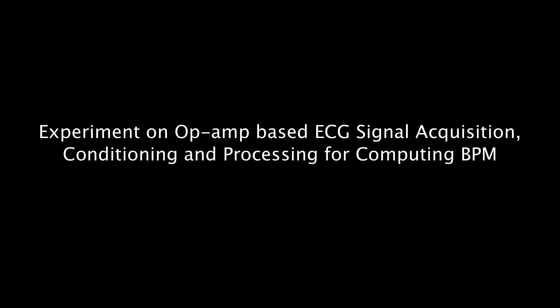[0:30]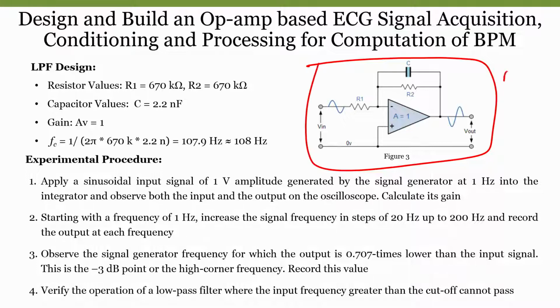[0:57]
How do we do filtering circuit, right? As we have already seen in our previous modules, we know how to make use of an operational amplifier and what are the advantages and disadvantages of going with active filters when compared to passive filters, and we have also discussed the design. Just recall what we have discussed, and if I see here, this is our active low pass filter, right?
So the combination of R and C tells our cutoff frequency, and the combination of R1 and R2 resistors tells us gain. Now, what value of cutoff frequency do we require? We require a cutoff frequency of 100 Hz. Since it is a low pass filter, I do not want to see odd multiples of our power line interference, that means 150 Hz, 300 Hz, everything. So, we will be using a low pass filter with a cutoff frequency of 100 Hz.
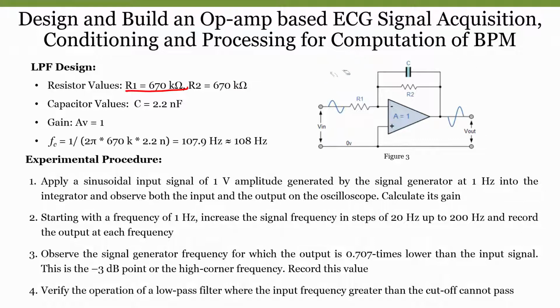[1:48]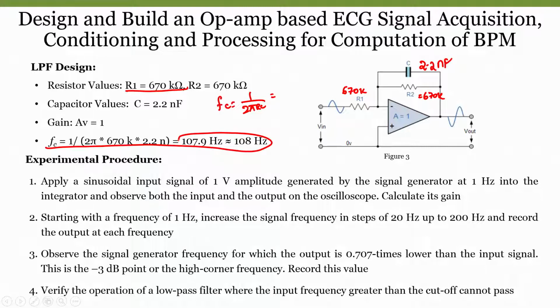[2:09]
Now, how do we know the cutoff frequency? In this case, we are considering a resistance of 670 kilo ohms. This is R1 670 kilo ohms as well as R2 also 670 kilo ohms, and the capacitor as 2.2 nanofarads. Now, if I compute the cutoff frequency, what is the formula? Fc is equal to 1 by 2 pi RC, right? So, when we calculate everything, we will get a cutoff frequency close to 108 Hz.
If I take 2 nanofarads, we can even get 120 Hz, or if I take a smaller value, it will be 100 Hz too. I mean, if I take a larger value, either of resistance or capacitance, we can achieve even 100 Hz. So, in this case, by considering the availability of resistors and capacitors, we are designing a first order low pass filter with a cutoff frequency of 108 Hz.
Then what about the gain of the system? Since R1 and R2 resistors are the same, and since it is an inverting amplifier, the gain is R2 by R1. So, therefore, the gain is 1 in this case. So, what output do we get? Without any amplification, with an amplification factor of 1, we will get the same output, but since it is inverting, we will get a negative. There will be a phase shift of 180 degrees.
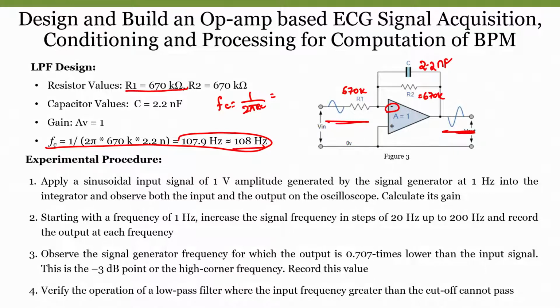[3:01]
Now, how do we know? If I want to understand the circuit, I should look whether it is cutting off at that particular frequency. I have to have a frequency spectrum, and connecting to a frequency spectrum analyzer will be very expensive too, because the equipment itself is very expensive. So, what we can do is visualize whether the designed filter is cutting off at that particular frequency in a CRO itself, and we can even compute the same thing in our laboratory too. How do we do that?
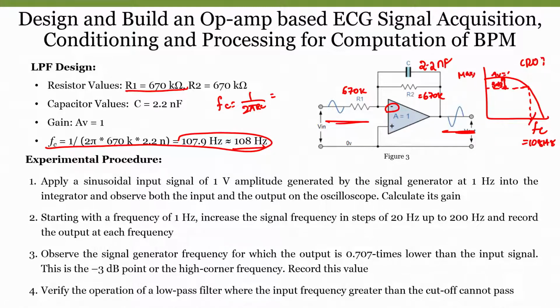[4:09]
As we know, when we look into the frequency spectrum of a low pass filter and the gain is 1, if we can calculate the 3 dB line, this is nothing but our cutoff frequency. Now, in frequency form we are saying this value is 108 Hz, but in a CRO, how do we find it? We know the maximum voltage we get. So, we will take a function generator and apply 1 volt as an input signal. Since the gain is 1, we will get an output of 1 volt. Now, we will slowly increase the frequency and observe the change in amplitude. Whenever we see the 3 dB line, which is nothing but 0.707 times that of your input signal, that particular point is our 3 dB line, and from that point the output voltage will keep on decreasing. That frequency is nothing but our cutoff frequency.
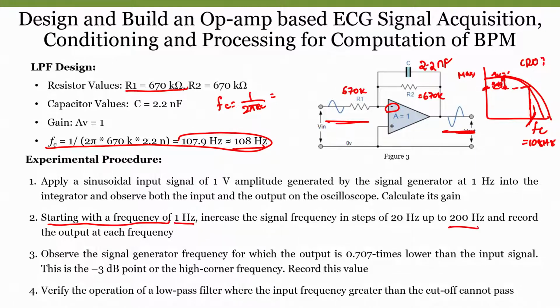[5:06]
But to give the frequency domain visualization, in a simulation I will show you the AC response as well as the DC response, and we can see the complete frequency domain values too. But this is how the connection should look, and we will be using a function generator to sweep from 1 Hz to somewhere around 200 Hz in steps of 20 Hz, and we will record the output at each frequency. So, we will observe the signal generator frequency for which the output is 0.707 times the input signal. That point is nothing but the 3 dB point, and we will consider that as our cutoff frequency. In order to understand much more, we will go to Multisim.
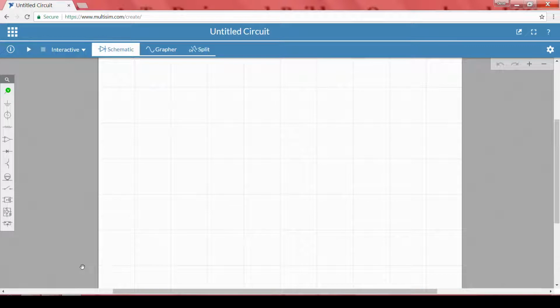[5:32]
So, as we have already seen how Multisim looks like and everything in our previous module, our intention here is to design a filter and see the frequency response, as well as whatever intuition we have learned from the previous experiments and the procedure that we explained. We will try to put the same thing here, analyze it in the time domain too, and compare the frequency domain response with the time domain.
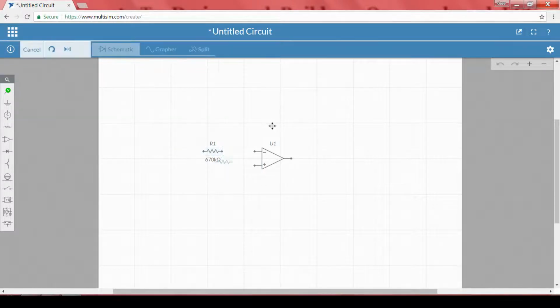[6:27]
So, in such case, what I need now, first I have to take my operational amplifier. So, I will go to op amp and I will select an op amp here. Then I have to take resistors. In this case we have taken 670 kilo ohms resistors, so I am replacing with 670 kilo ohms resistor, and one more resistor that is also 670 kilo ohms. So, that is a negative feedback resistor.
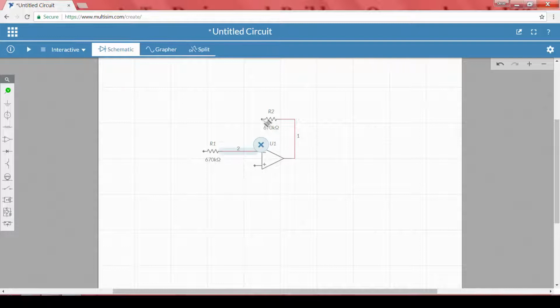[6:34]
So, I will be connecting from here to here. Then what is the other one? We also have to connect a capacitor across R2. So, what I will do? I will take a capacitor. What is the capacitor that we have used in our theoretical designs? We have used 2.2 nanofarads. So, I will go with 2.2 nanofarads, and 2.2 nanofarads are available in the market too, right.
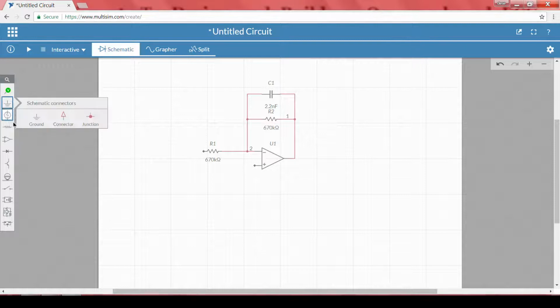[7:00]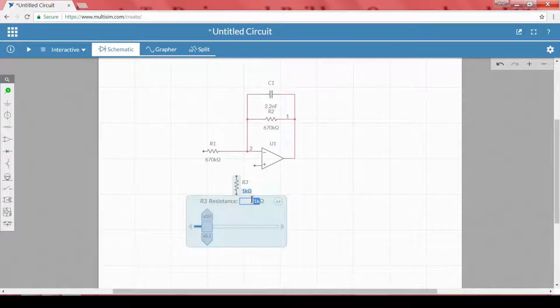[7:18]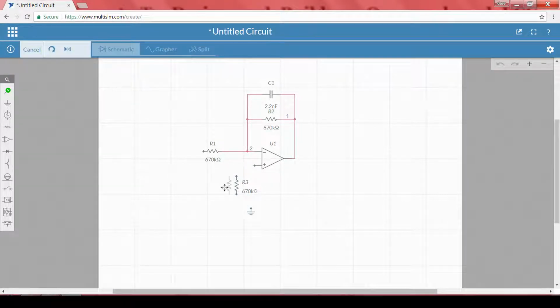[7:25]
Then the positive terminal should be connected to ground. So, what I will do is that rather than connecting to ground, in order to eliminate the effects due to the bias and offset currents, I will use two resistors in parallel, which are nothing but 670 kilo ohms resistors itself, so that the effects due to the bias and offset currents can be completely removed, as we have already studied in our previous modules, is not it. So, I am taking R1 and R2 resistors, and these two we are connecting in parallel, so that it will compensate for the effects due to the bias currents.
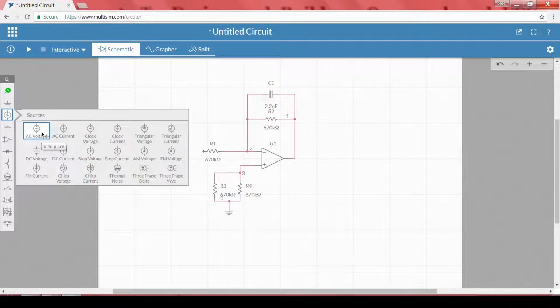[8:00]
Then I have to apply some AC voltage, right, and the other terminal should be connected to ground. I will take it to ground. This is my input. So, in order to visualize the system, I will take the input here, and the other one I will take as output. Now, in order to understand the cutoff frequency, a good way is to go with our AC sweep.
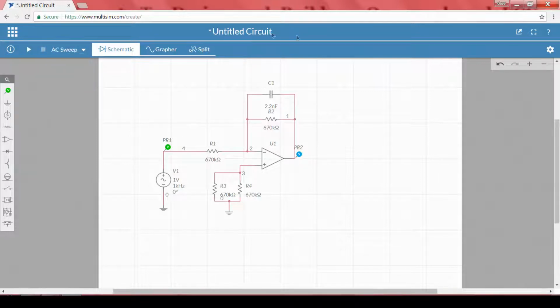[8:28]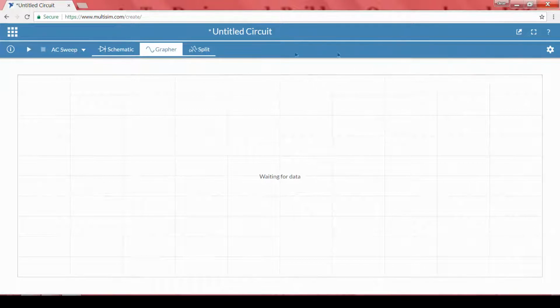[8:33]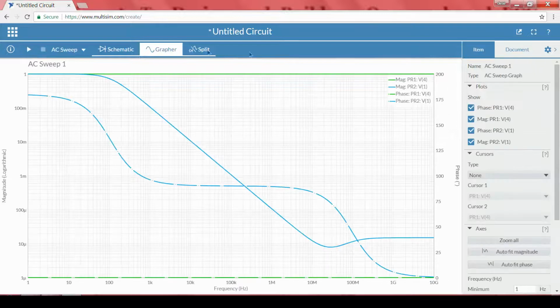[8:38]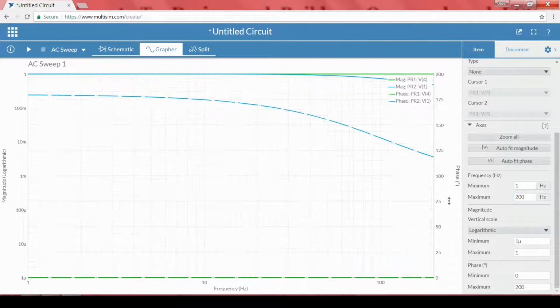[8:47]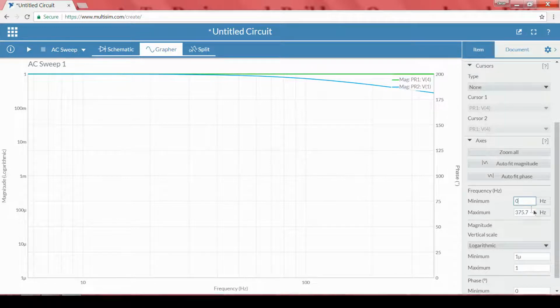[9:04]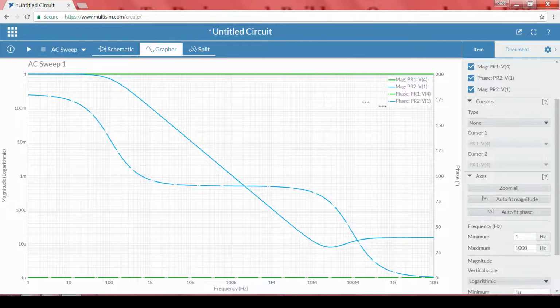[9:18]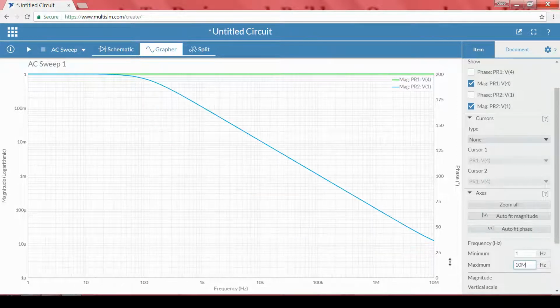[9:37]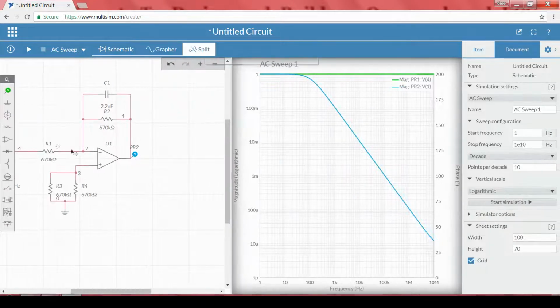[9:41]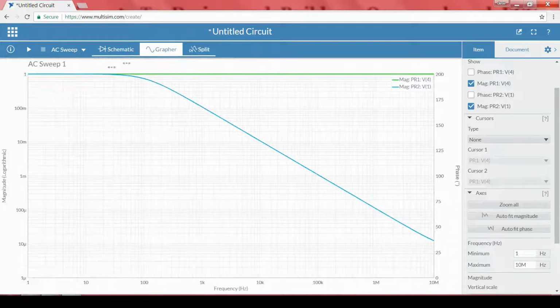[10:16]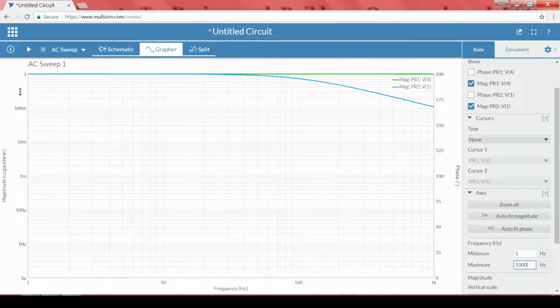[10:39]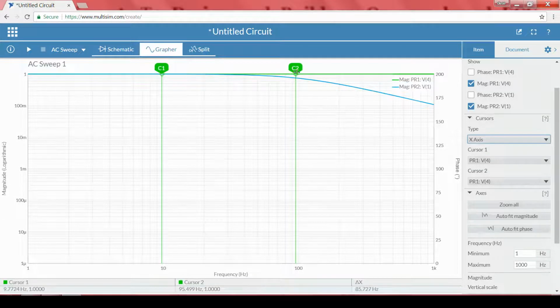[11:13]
So, in order to do that, I will zoom the frequency domain. In order to zoom, I will change these frequency values to somewhere around 1 kilohertz. Now, this is 1 dB, the one below is another dB, and this is this dB. So, this frequency is somewhere around 700, right. This is 1 and this is 700. So, approximately at the 3 dB line, what is the frequency at this point? We can see here 100 hertz, 733.68 milli dB. Or if I put a cursor, I will put an x axis cursor. I will be slowly varying it, observe the C2 cursor. I will be varying it to 99. Sorry, where is that?
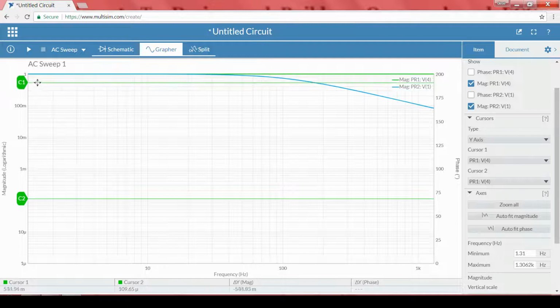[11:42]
3 dB line. So, the C2 value should be, let us take somewhere around 100 hertz. Then I will take the y axis cursor, because we require 700 millivolt magnitude. So, slowly I will increase, observe dy, delta y here. So, this particular value, right. 750, 800, slowly decrease. 694. So, this is nothing but my line.
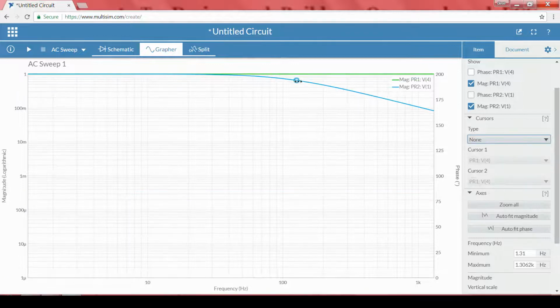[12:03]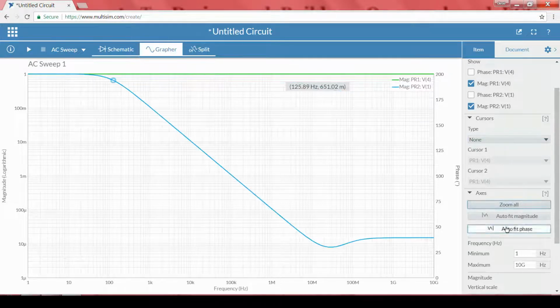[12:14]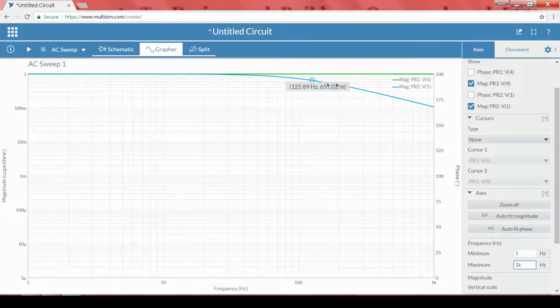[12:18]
If I observe, this particular point will be 700 milli, somewhere close to this. I am unable to do that because of the resolution. Okay, 1 kilohertz. Because of the resolution, I cannot see that, or I can zoom the vertical scale a little bit. So, maximum minimum I will say somewhere around 1 milli, right. Now, if I see 125, we can understand that it is somewhere close to 100 hertz, right.
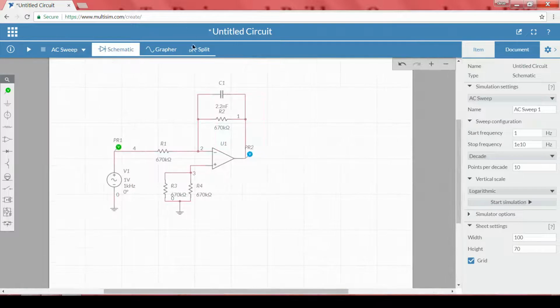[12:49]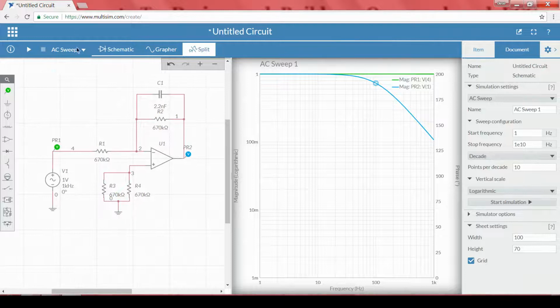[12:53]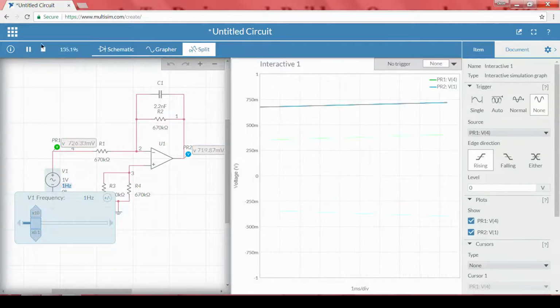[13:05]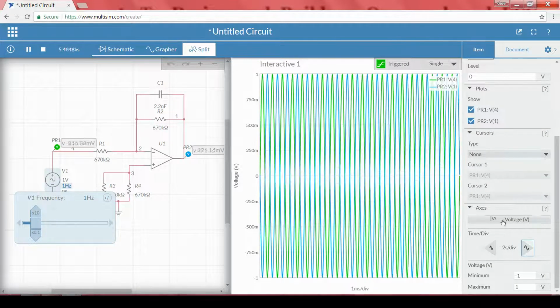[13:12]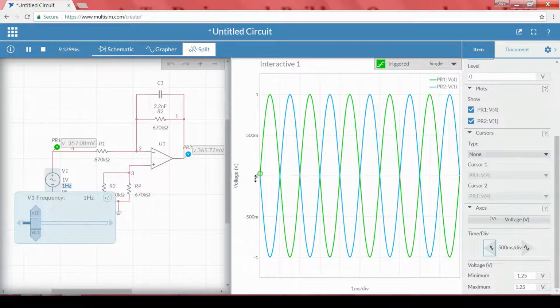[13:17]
Now, how do we do the same thing? How do we understand this when we are looking into the CRO? So, in order to understand, rather than going with AC sweep, I will go with interactive. So, here starting from 1 hertz, we will change and observe the input and output frequencies. So, I will increase the time division. We can easily observe the phase difference.
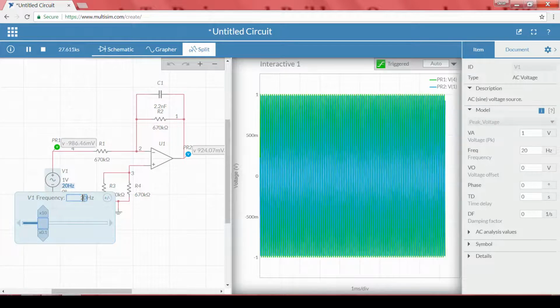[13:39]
I will make it auto. We can see the phase difference. This is our input, the green color one. The blue color one is nothing but our output. Because we are using an inverting amplifier, there is a phase difference, and amplitude wise it is one and the same. Now, I will slowly increase the frequency. There is no change in our gain. So, with the rate of 20 hertz, I will go with the 20.
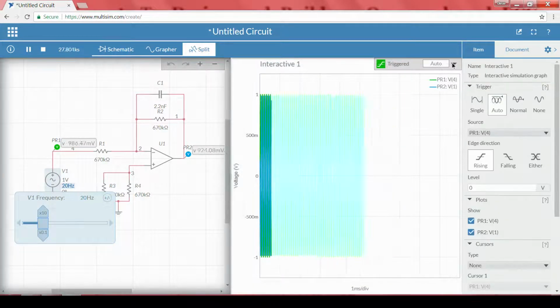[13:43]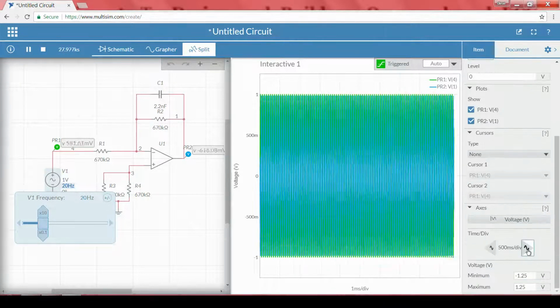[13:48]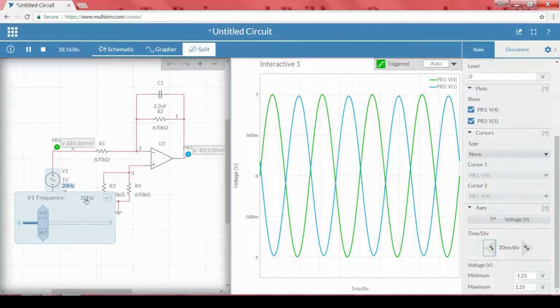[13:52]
I will make it single or auto. And in order to visualize, I will decrease the time division, right. Then again, I will go with the 40, right. So, in order to understand that, let me put cursors. I will go with the cursors and make it a y axis cursor. So, at what point do we have to see? We have to see a point at 0.707. So, I will put cursor one at 707 millivolts.
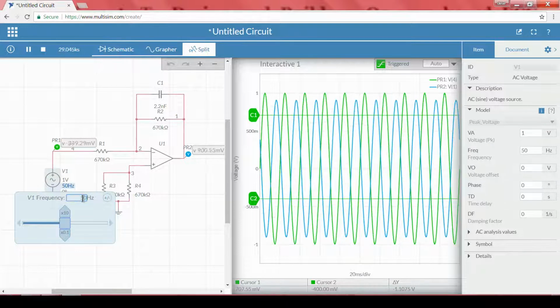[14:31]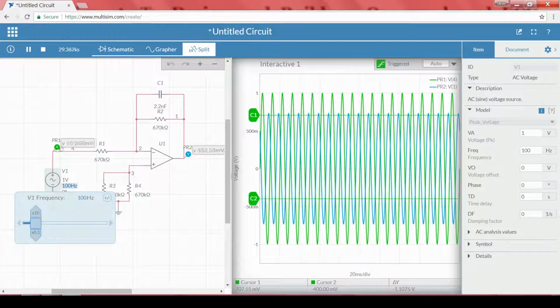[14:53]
We can see the cursor right now, yes. So, cursor 1 is at 707. When this blue color line is below the 707, that frequency is nothing but our cutoff frequency, right. So, I will increase to 50. No, not decreased yet. So, I will go with 60. No change, not lesser than 707 millivolts. 80, not even. So, I am going with 100, right, almost close.
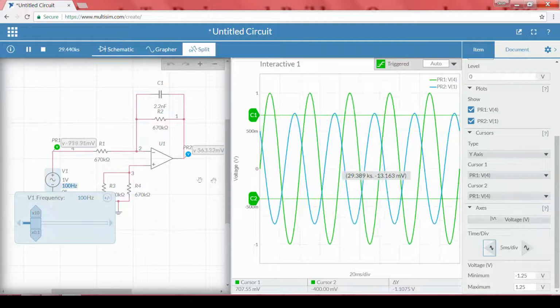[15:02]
Now, we will increase one by one. Before that, I will increase the time division a little bit so that it is easy to view. Somewhere around close to 105, almost coming close. Now I will increase to 107, right, even a little bit higher, so I will go with 108, right. If the input is at 108 hertz, the output voltage is 707.55 millivolt. Even if I increase it to 109, 110, it started slowly decreasing, 120 decreased. So that particular value is nothing but our cutoff frequency.
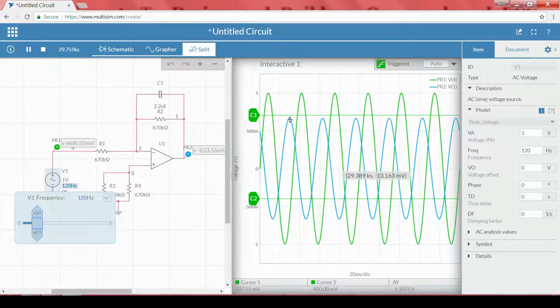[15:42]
So in order to visualize by using a time domain signal by looking into the CRO, one way to do it is to slowly increase your input frequency. Whenever it goes to the 3 dB line, which is 0.707 volts, that is 70% of your maximum voltage, that is nothing but 707 millivolts. Whenever the output voltage is lower than 707 or just at that point of 707 millivolts, that frequency is nothing but our cutoff frequency. So we have seen that it is somewhere around 108 hertz, right.
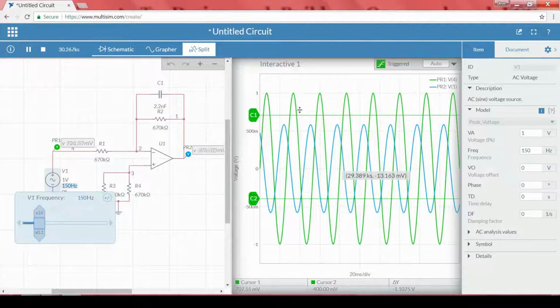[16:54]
But even if I increase the frequency, it is not suddenly attenuating to even below 500 milli. The reason is the roll-off factor. The roll-off factor of a first order filter is 20 dB per decade. Because of the very small roll-off factor, it will also allow a particular band of frequency to pass through. But we require a cutoff, we do not want to pass a frequency at 150, that is our power line odd multiple frequency. But if I observe at 150 hertz, we can see that it is much more below our cutoff frequency, so we do not have any problem.
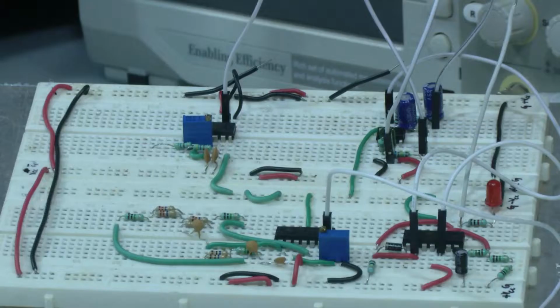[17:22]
Now we have done the simulation, we will do experimentally the same thing. Since we do not have a frequency spectrum, we will show you how to do the same analysis using our breadboard, and we use a function generator as well as an oscilloscope, and we visualize the same thing, and we will observe at what particular frequency it is reaching 707 millivolts.
When we look into the breadboard, this is a complete signal conditioning as well as processing circuit that we are going to use in this particular case study. If we observe here, this part is our instrumentation amplifier part. This part contains the low pass filter. If I see, I am using 2 nanofarad. This is our 2 nanofarad, the green color wire.
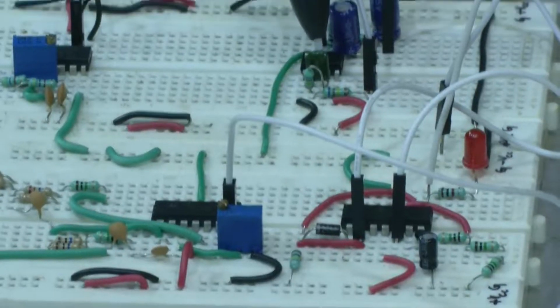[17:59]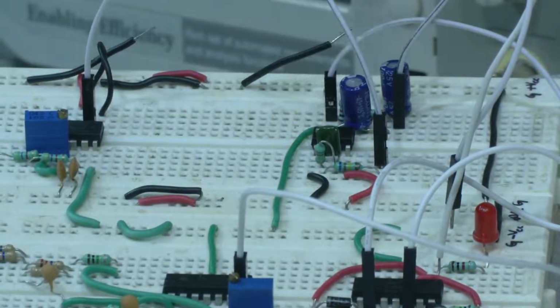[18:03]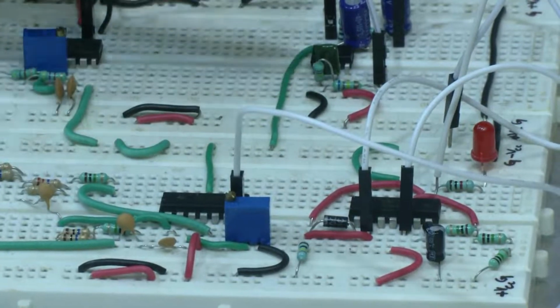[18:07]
Here we can see this green color capacitor is a 2.2 nanofarad capacitor. And these are our 2 resistors, one is here, other one is here, 670 kilo ohms, right.
This is a TL082 IC, so it has a dual op amp. One side of the op amp we are using for low pass filtering. Now we will see how this low pass filtering circuit works, and the connections I have already discussed in the simulation as well as in our PowerPoint too.
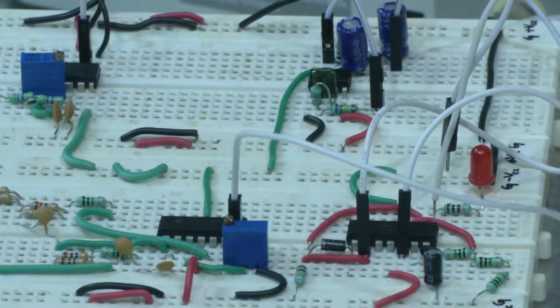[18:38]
So the same circuit I have made on a breadboard, and we will apply an input from the function generator, right, and we will observe the output in our oscilloscope. So how do we do that? First thing, since it is an active filter, we have to power it. So we will take a voltage source, and we will connect plus 15 and minus 15 to our breadboard.
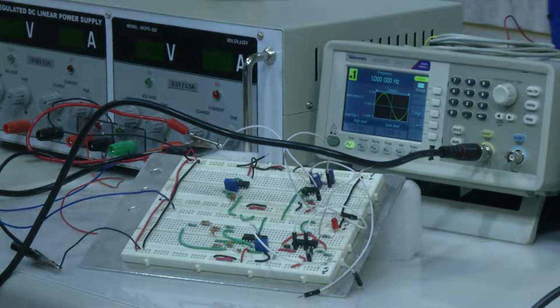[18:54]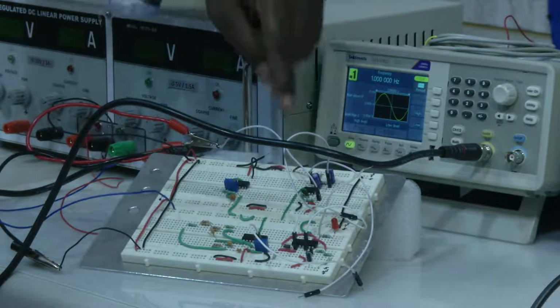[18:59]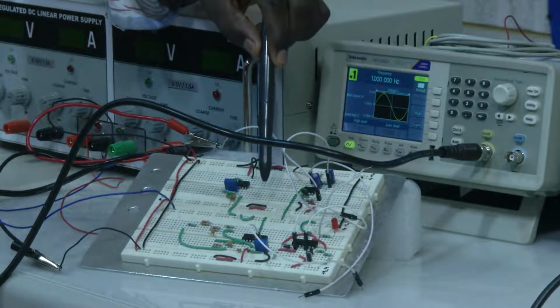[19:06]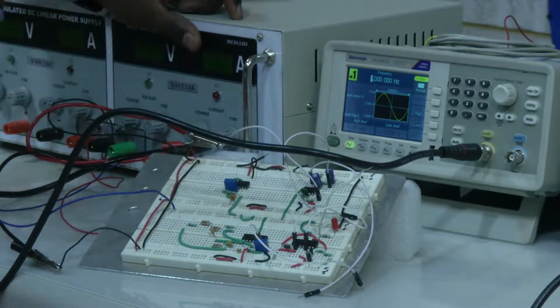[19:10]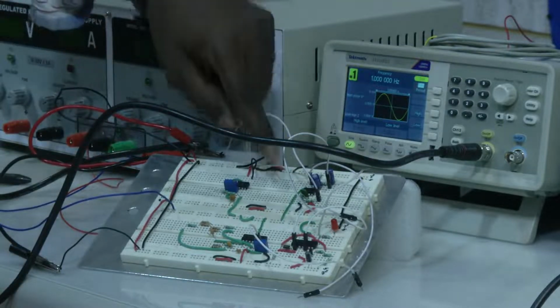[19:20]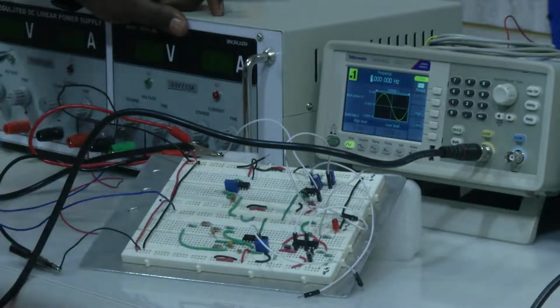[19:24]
So now, onto this particular part wherever we have designed the low pass filter, which is similar to the connection that we have seen in our simulation as well as our presentation, we can see one side of an operational amplifier is a low pass filter. Now by using a function generator, it is being connected to the input resistor. So here we can see, to this input resistor we have connected this white color wire, right.
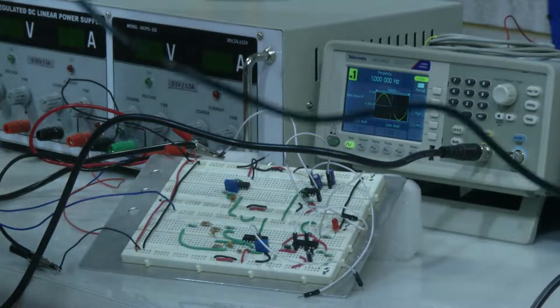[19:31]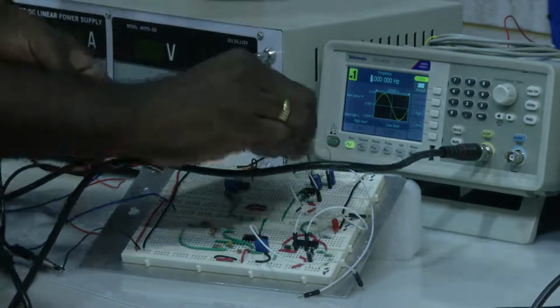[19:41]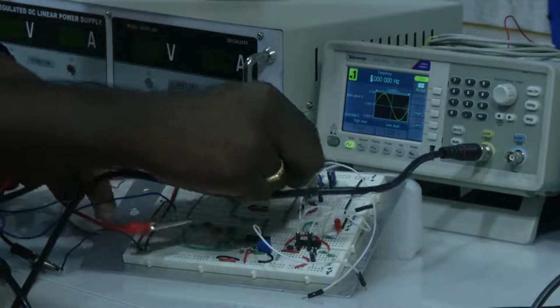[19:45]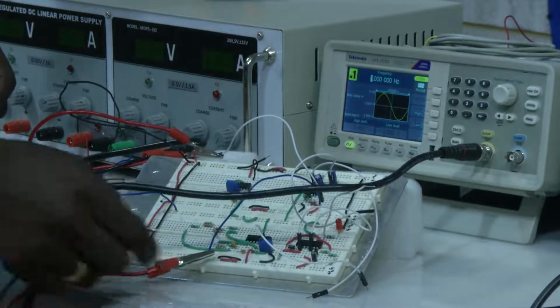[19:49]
From one side of the CRO oscilloscope, we use a probe and we will connect it to the same point so that we can see the input signal too. So here I am connecting it to oscilloscope channel 2. This is the input to the oscilloscope. Input signal is connected as an input to the oscilloscope and ground to ground.
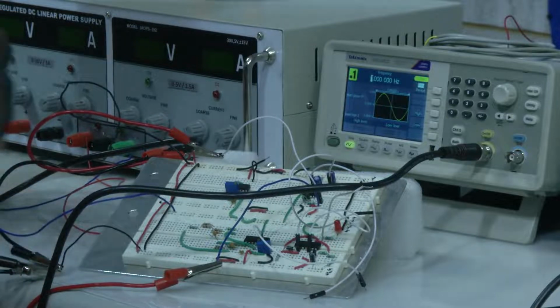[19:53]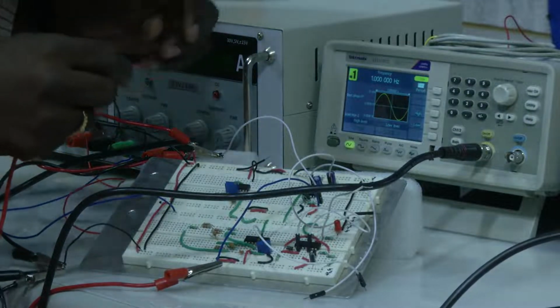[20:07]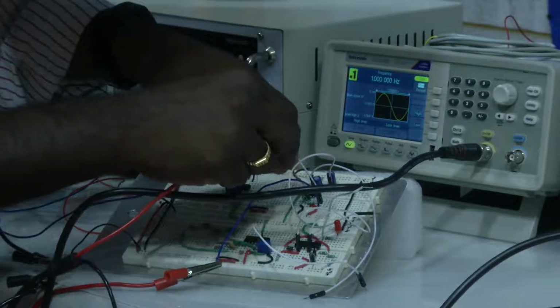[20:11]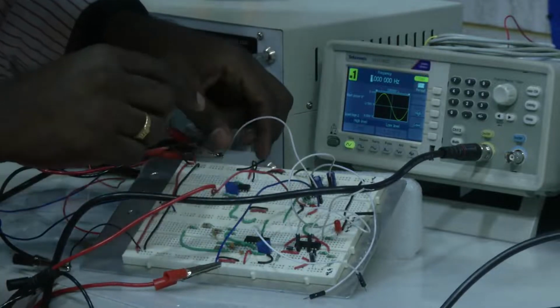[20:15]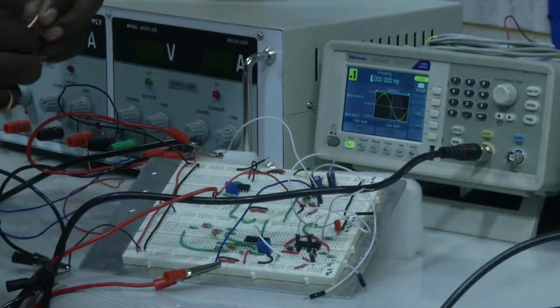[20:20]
Then what is the other one? We also have to see the output. So we are taking another probe of the oscilloscope and connecting it to the output. Output here is the 7th pin, right. So the 7th pin is this one. And this is to ground.
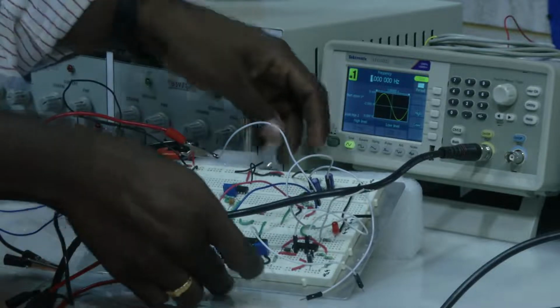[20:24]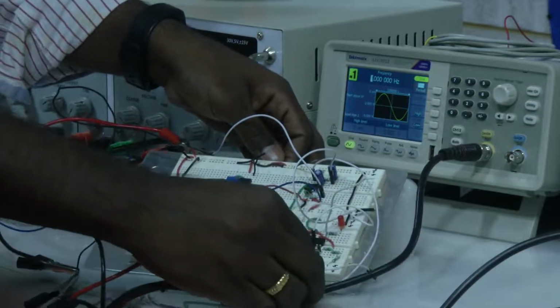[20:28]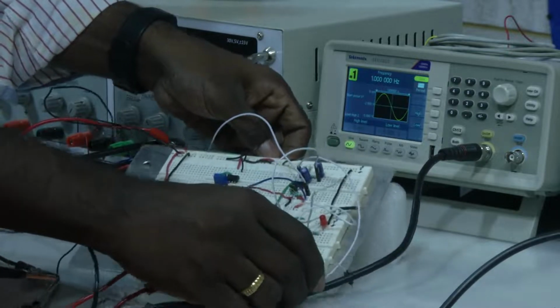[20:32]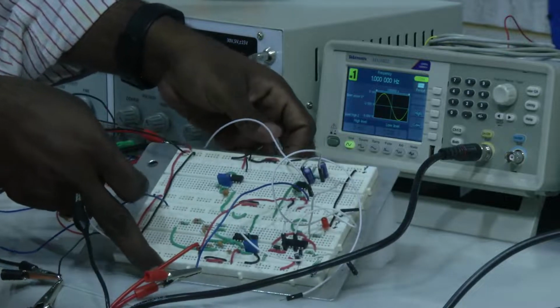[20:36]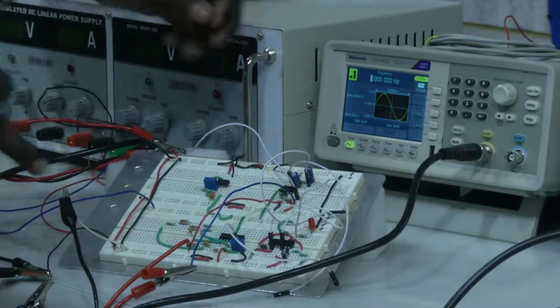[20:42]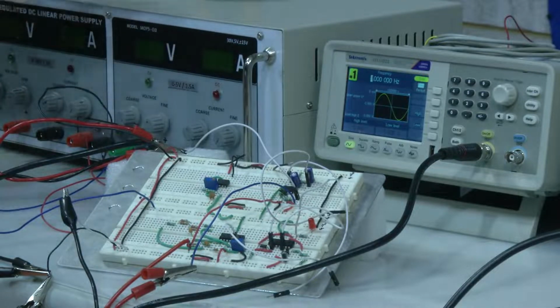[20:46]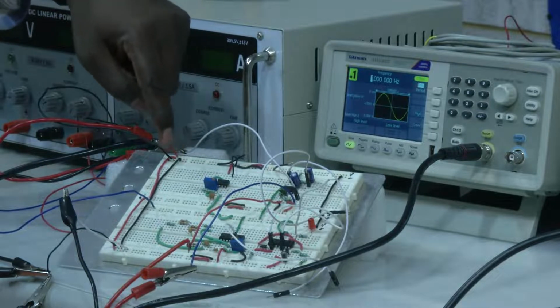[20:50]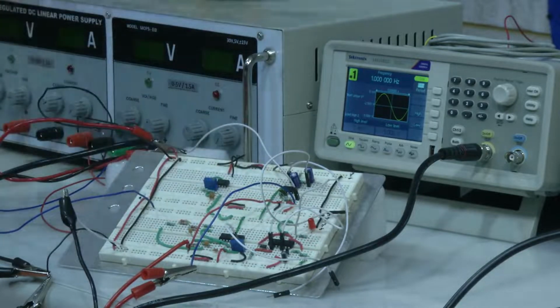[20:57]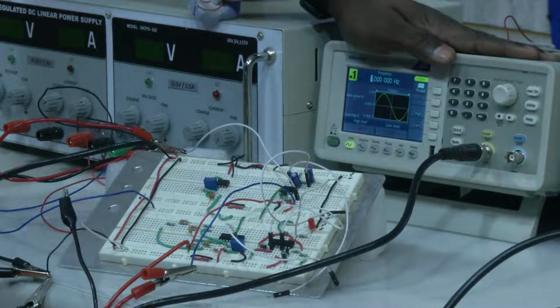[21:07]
So what we have done here? From our voltage supply, we have connected plus 15 and minus 15 to their respective inputs provided on the breadboard, so that by using wires we have already connected all the ICs. Whenever I switch on, all the ICs used on the breadboard will be powered with plus 15 and minus 15. Then using the function generator, we will generate different frequency sinusoidal signals
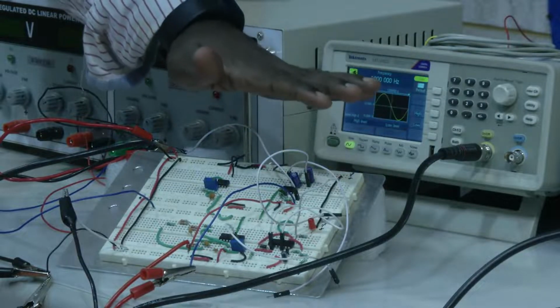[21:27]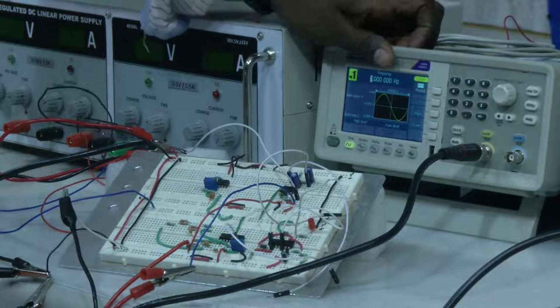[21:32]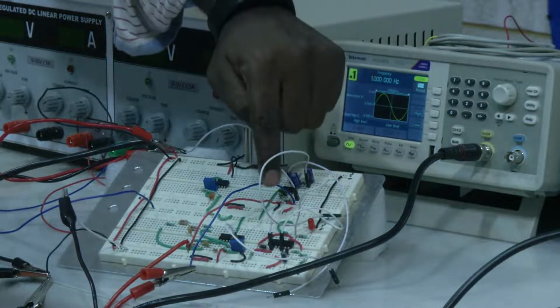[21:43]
starting from 1 hertz up to more than 100 hertz, so that we can observe at what frequency the output is becoming 707 millivolts, right. So, 0.707 volts. That is being connected as an input to the low pass filter, at the point of input resistance, which is nothing but the R1 resistance, and the output is taken at the 7th pin of the op amp. Since it is a TL082, we are using the second op amp of the TL082. So the output is at the 7th pin.
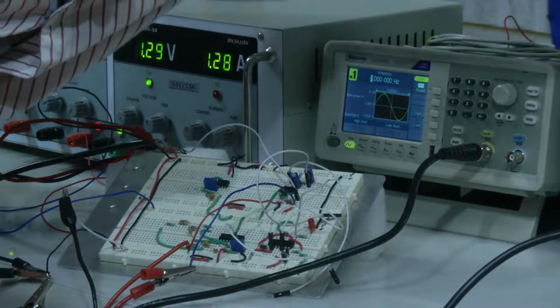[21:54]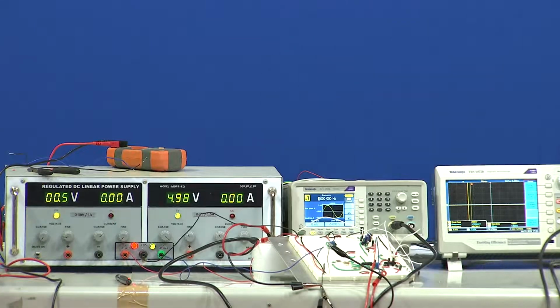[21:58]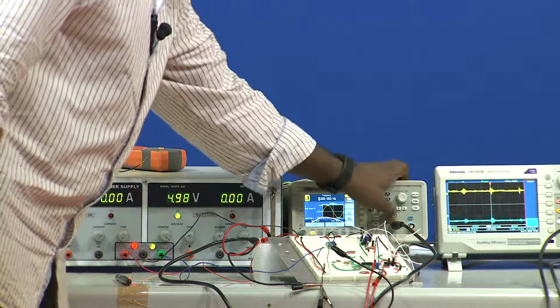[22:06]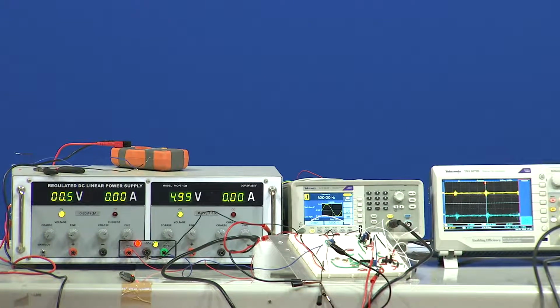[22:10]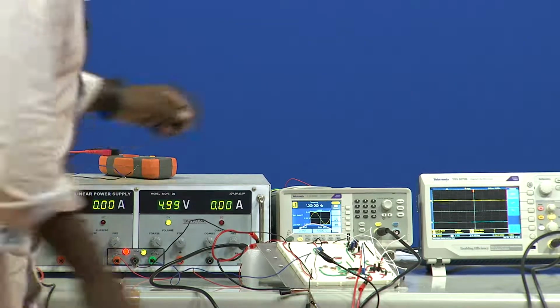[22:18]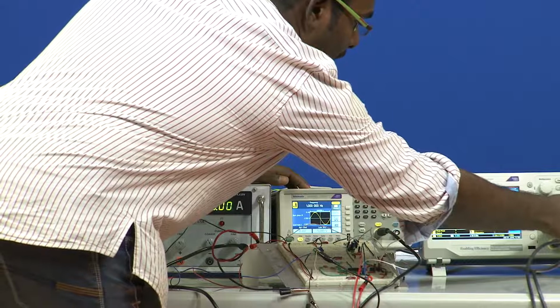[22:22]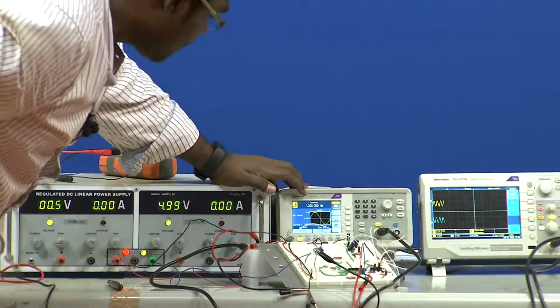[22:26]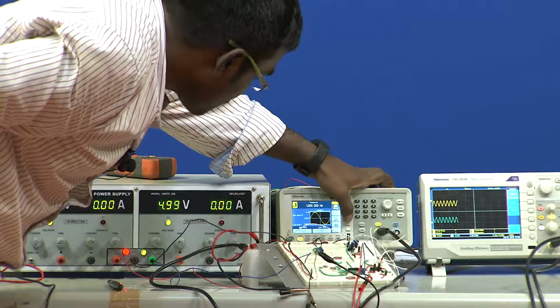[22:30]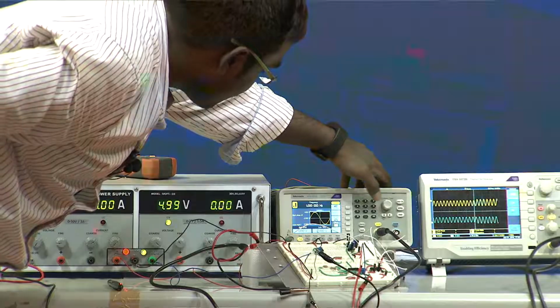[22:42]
Now, I will switch on the power supply. Okay. We switch on the power supply and make it auto scale. Switch on the function generator. Increase the scale. So the input voltage applied, here we have to change the input voltage. So the amplitude, I am setting it as 1 volt, and offset I will make it as 0 volts,
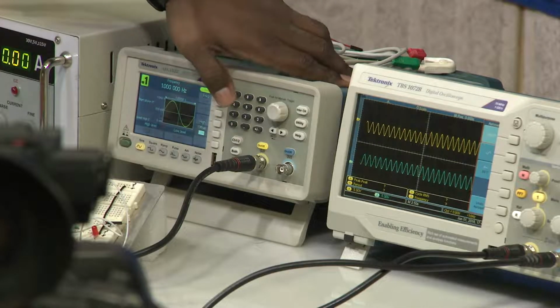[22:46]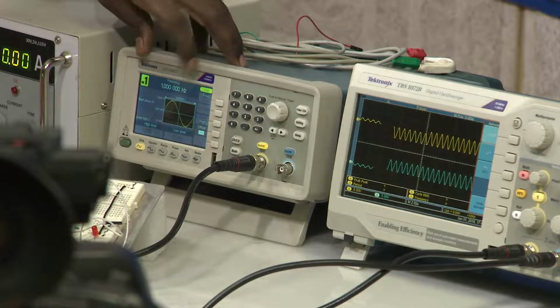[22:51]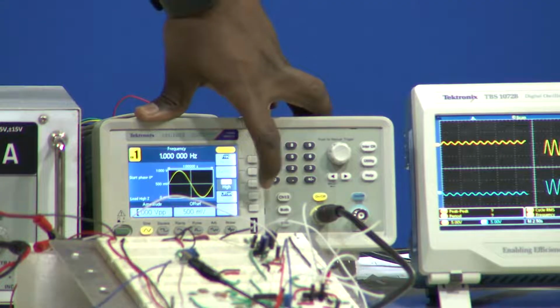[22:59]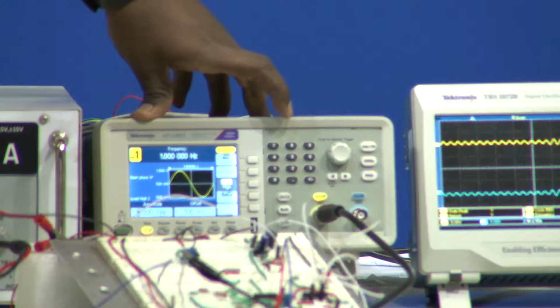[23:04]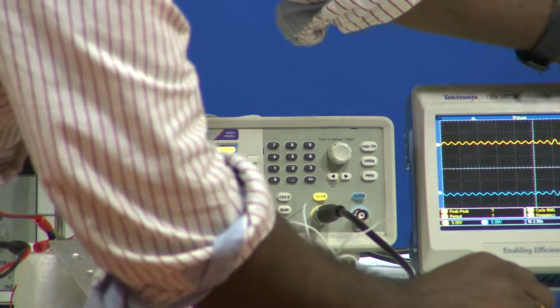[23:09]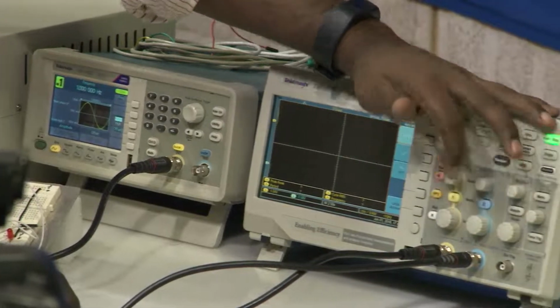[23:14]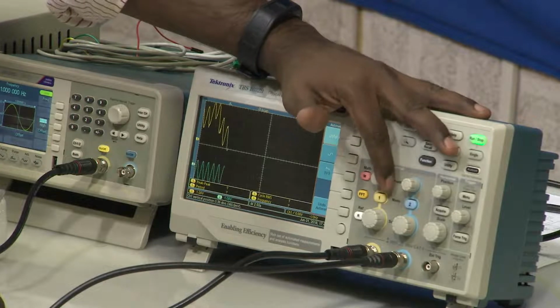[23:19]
right. So rather than taking this, what I will do is 1 volt peak, 2 volts peak to peak we will apply. So we will go to high, amplitude to 2 volts peak to peak. So we can see 1 volt input as well as 1 volt output. Now, to visualize the signal, I will increase the scale to 1 volt, both the input as well as the output, and make it at a single point. So I am shifting both signals to one point, that is the 0 position.
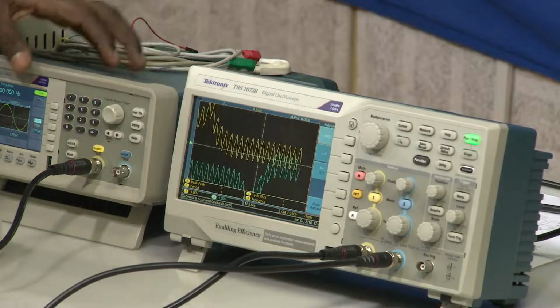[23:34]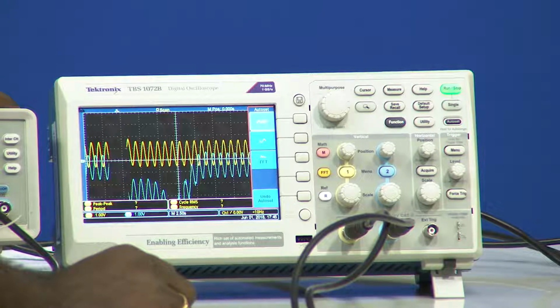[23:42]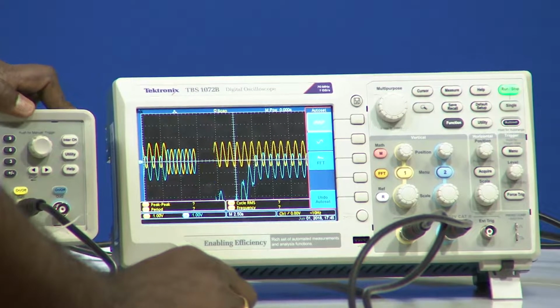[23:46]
So, yes, 0 division, and we have an offset of 500 milli. Even I have to remove the offset here. So, I will go to offset, make it 0 volts. Now, there is no offset, we can see that. Now, slightly increase the scale,
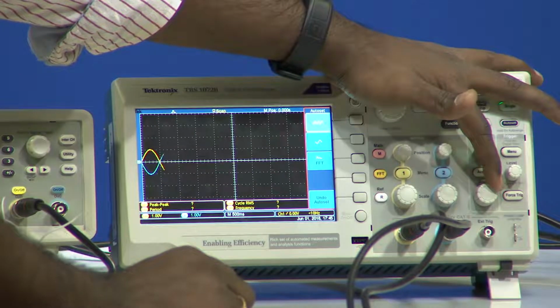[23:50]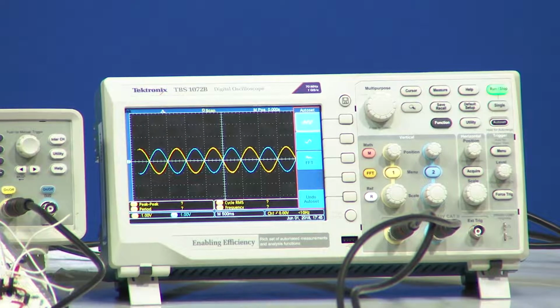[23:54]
right. So, yellow represents our input signal, and the blue one, the second one, is our output signal. When we observe, there is a phase difference between the input and output. This is because of our inverting amplifier. So, we know that an inverting amplifier will have a 180 degree phase shift because of that. Now, but what about the amplitude?
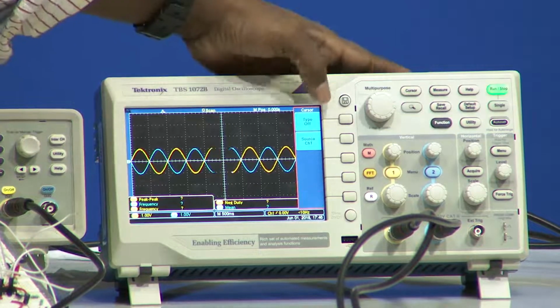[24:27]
We have to look at the amplitude now, is not it? So, what is the voltage below which we have to consider? What is the voltage that we have to consider to calculate our cutoff frequency? 707 millivolts. So, in order to understand, I will create a cursor, an amplitude cursor, right. So, I will put the cursor at 707 milli.
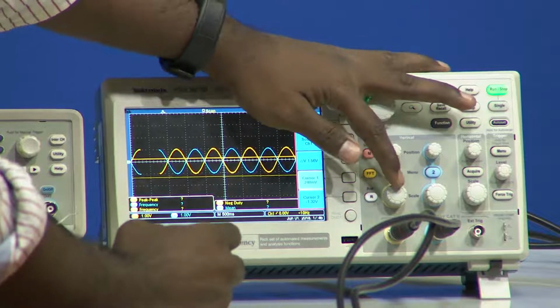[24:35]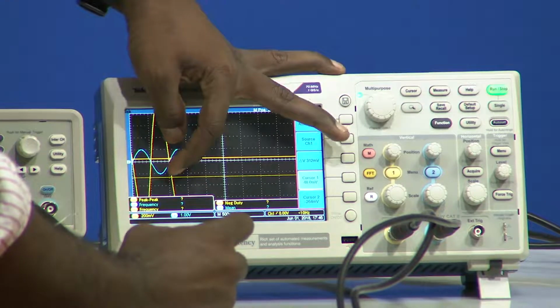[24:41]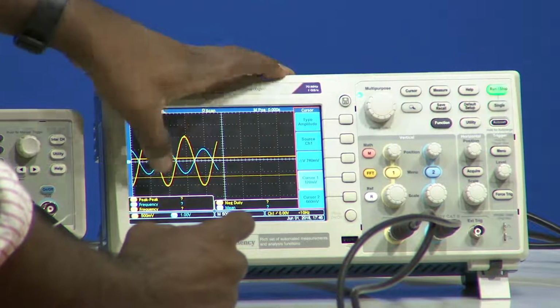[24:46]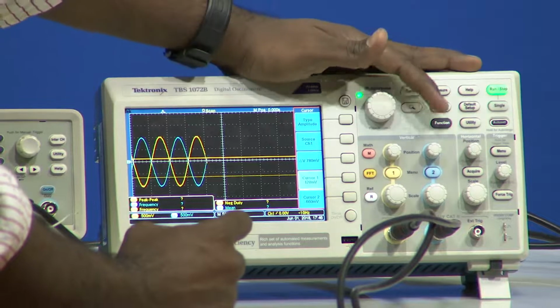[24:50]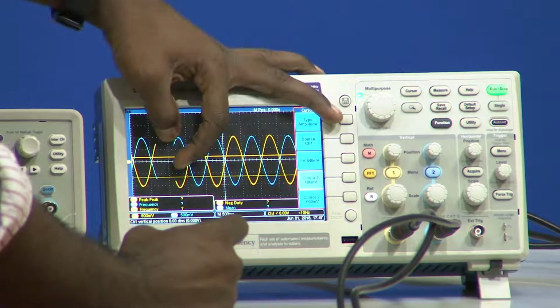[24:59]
So, since we have even more range, I will decrease the width of it. So, I am making it 500 milli as one block, even for the negative 2, 500 milli. Now, okay, sorry, I will change the division. So, 1 division now is equal to 500 millivolts for both input as well as output. I will put the cursor at 707 millivolts.
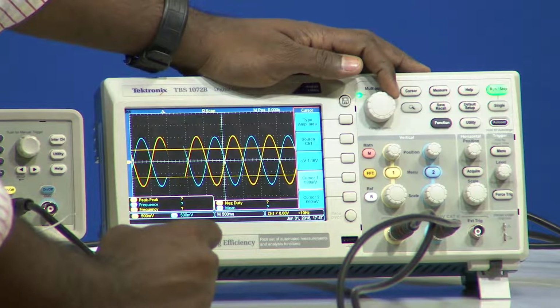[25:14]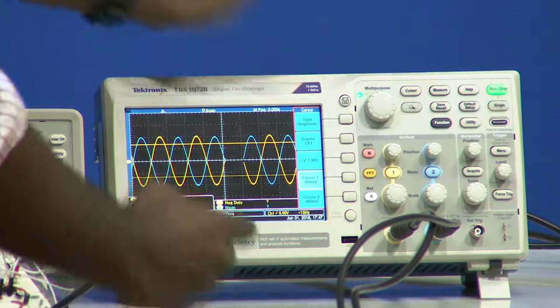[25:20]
So, I will go to cursor 1, right now it is at 180 milli, I will go slowly till 707 millivolt, 520, 580, yes, 700 millivolts. So, I will observe by changing the input frequency, we will see at what particular frequency the output voltage is below the threshold that we have set, right. The threshold is 707. Now, we will slowly change the frequency at an interval of 20 hertz.
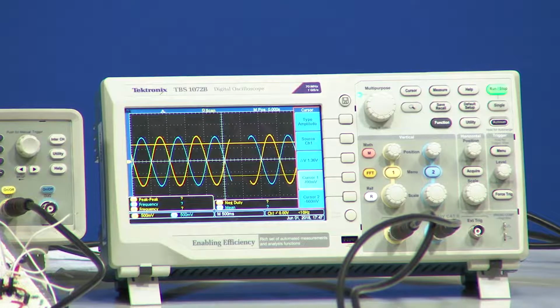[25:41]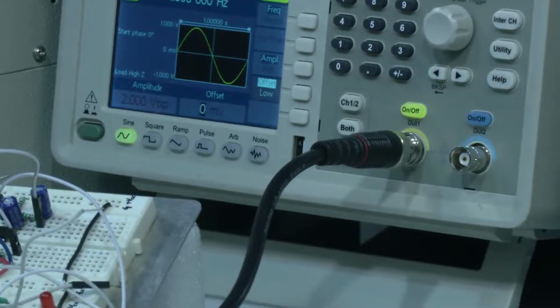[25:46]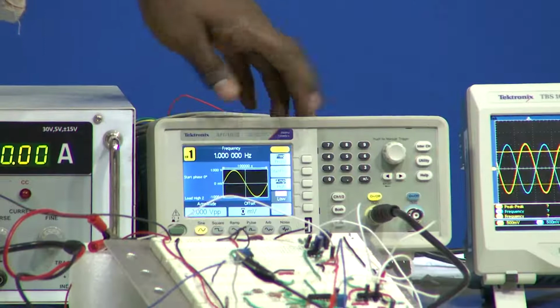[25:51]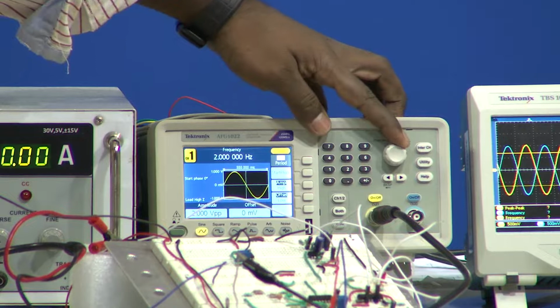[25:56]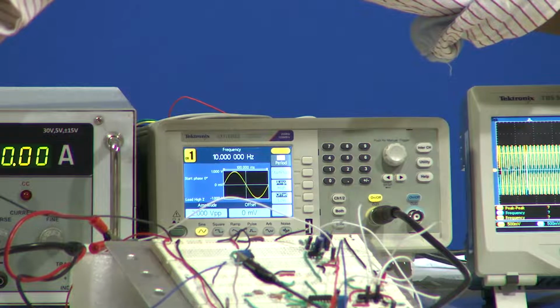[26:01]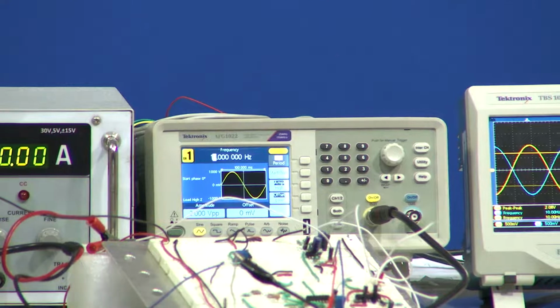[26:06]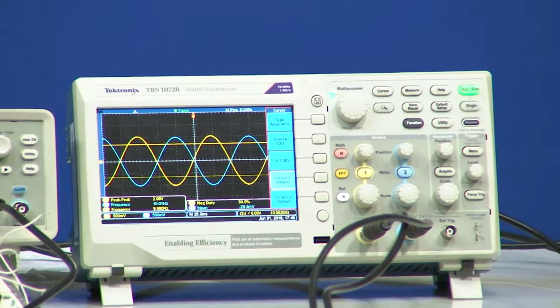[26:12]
So, when we look into the function generator, I will go to the frequency and I will change it to 20 hertz. Right now, it is at 10 hertz. Observe the input and output. I am changing the knob there. Now, when I see the output, the amplitude is still following, right. It is even greater than the line. That means, this is not our cutoff frequency.
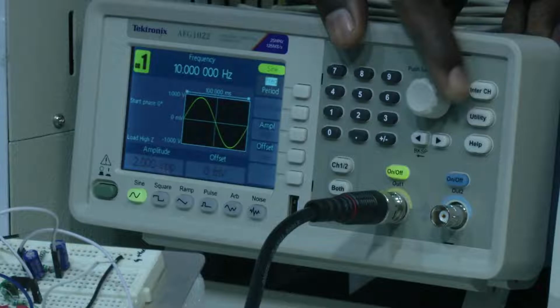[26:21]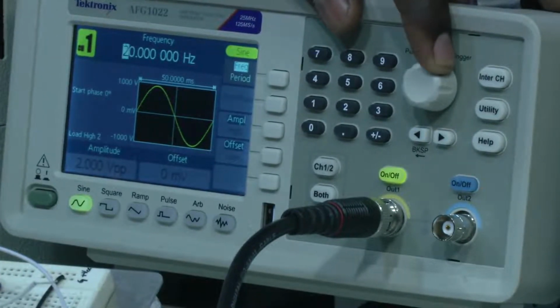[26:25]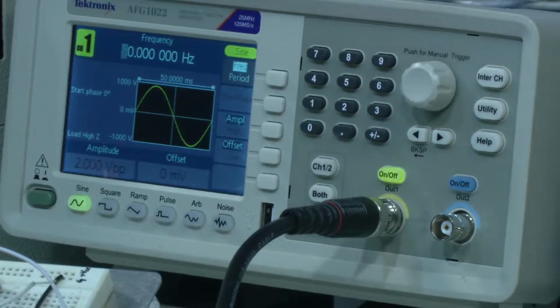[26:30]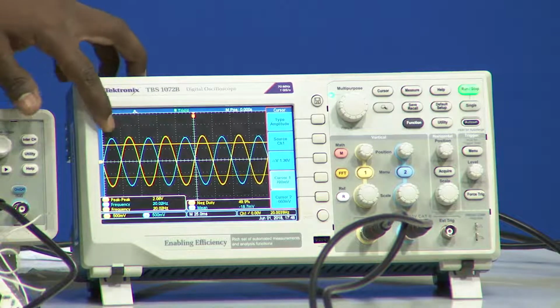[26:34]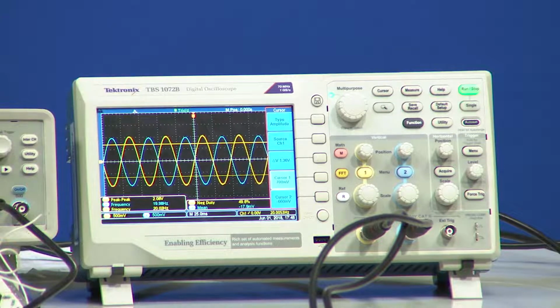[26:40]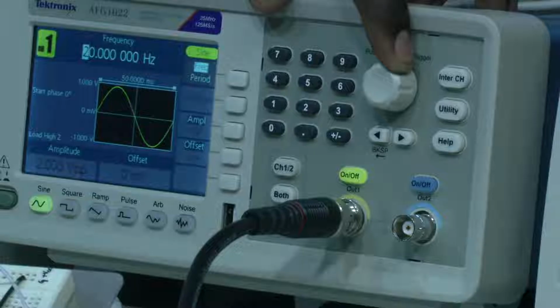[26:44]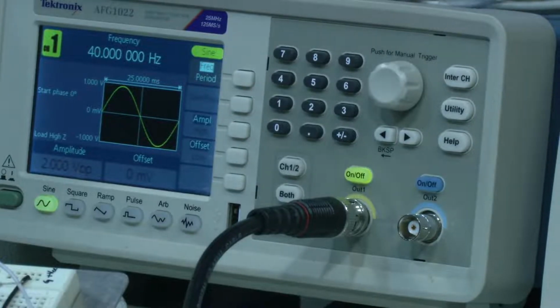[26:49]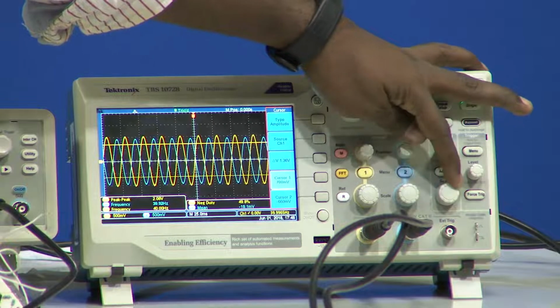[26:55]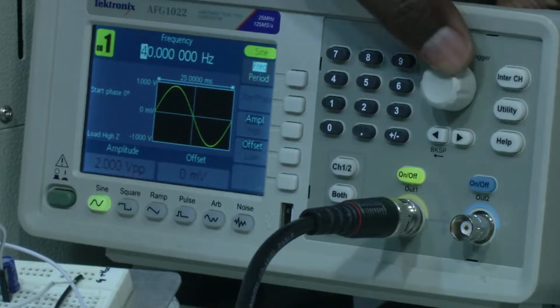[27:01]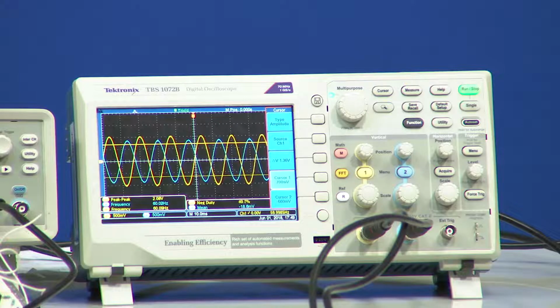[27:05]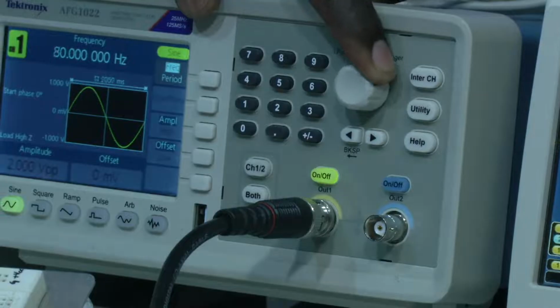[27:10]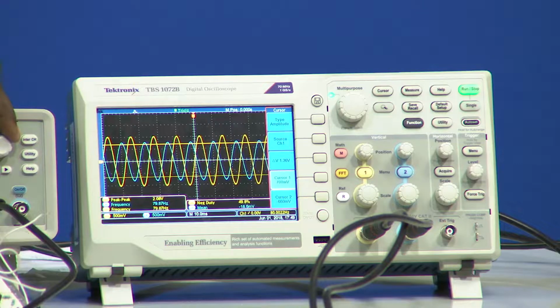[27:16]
Now, I will change it to 20. What is the frequency we are getting? Observe the frequency. Frequency is same, amplitude even above the threshold value. So, that means, even this is not it. I will increase to 30, 40, observe the output. Even more, right. Now, go to 50 and 60, observe, same. So, even that is not our cutoff frequency, then 80, observe, it is even greater than the threshold value.
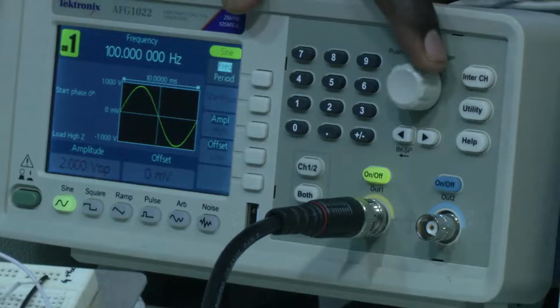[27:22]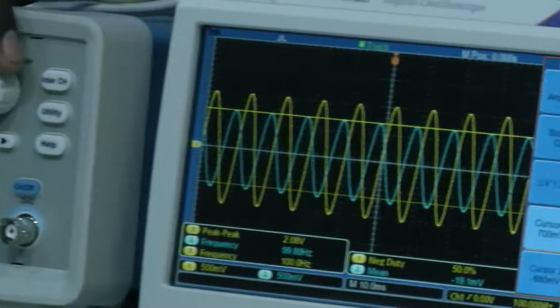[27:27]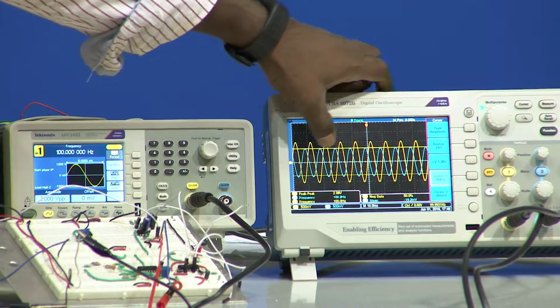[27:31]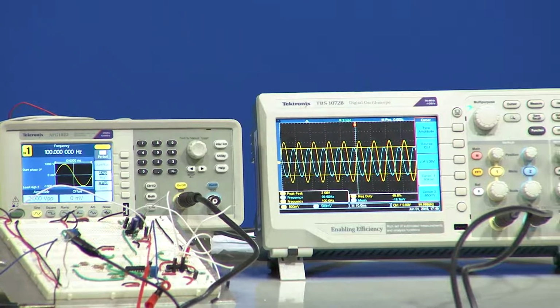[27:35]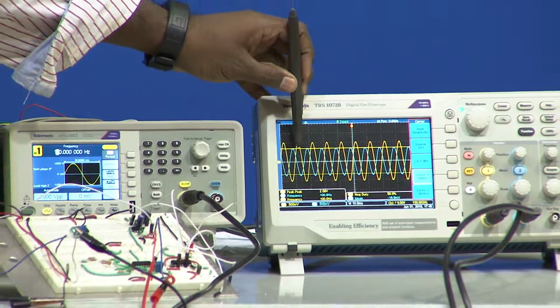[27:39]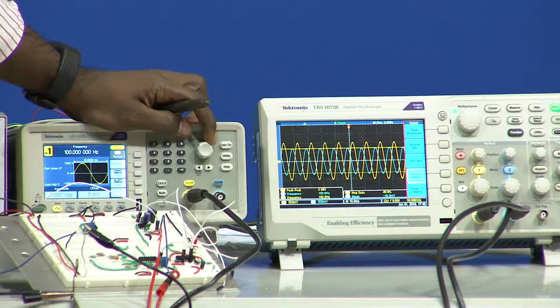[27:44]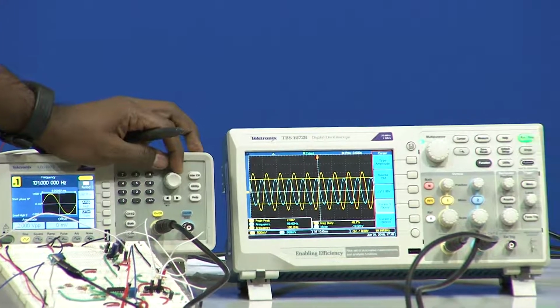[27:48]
So, the threshold is at 700 milli, right. Then again, I am going to 100. When I look into the oscilloscope, I can see that it is very close to the cutoff, very close to our 3 dB line, which means that this is almost near our 3 dB line. So, I will slowly increase the input frequency and we will see at what point it started decreasing.
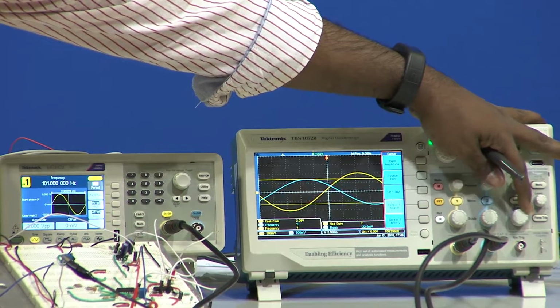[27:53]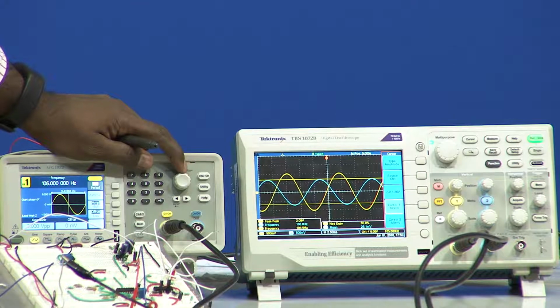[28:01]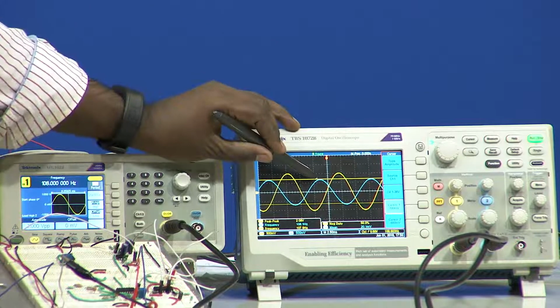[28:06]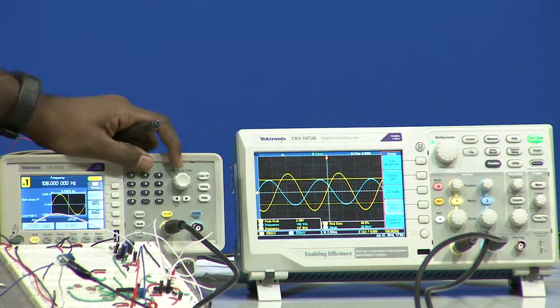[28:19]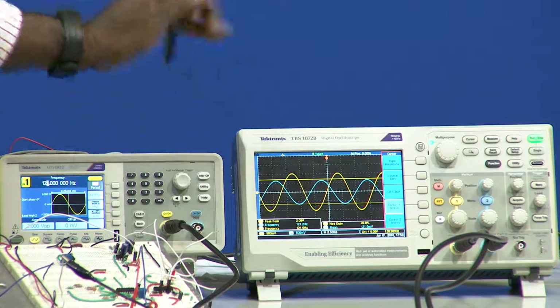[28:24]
So, to visualize it, I will change the scale. So, we can see 102, 103, 104, 105, 106, 107, 108. Now, if I clearly observe here, when we zoom into this particular point, at this point, it is slightly below our threshold value. This threshold is 700 millivolts, right. But if it is greater than this value, we can see the value is slowly decreasing. That means, the output is attenuating, right.
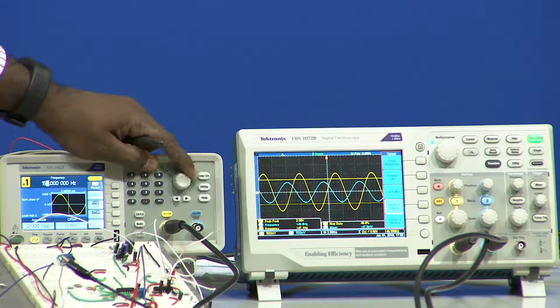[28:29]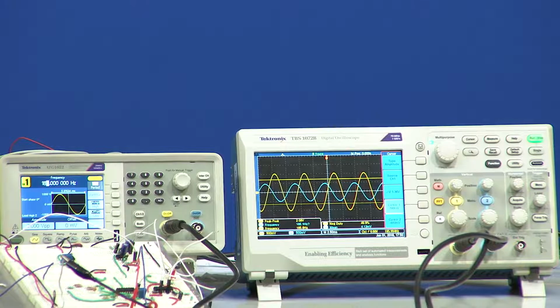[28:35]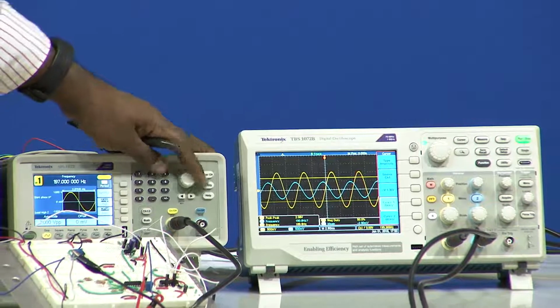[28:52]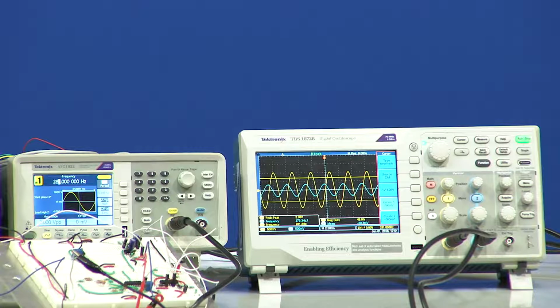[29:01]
We can observe that only the output amplitude is decreasing. Now, when we recall our filters, we know that for a low pass filter, above the cutoff frequency, the output will not be removed, it will be attenuated. So, here we can see higher the frequency, the amplitude of the output is slowly decreasing. So, from this experiment, we can conclude that the cutoff frequency of the filter is somewhere close to 108 hertz, right. Even with our theoretical design, we got 108 hertz, even with our simulation design, we got 108 hertz.
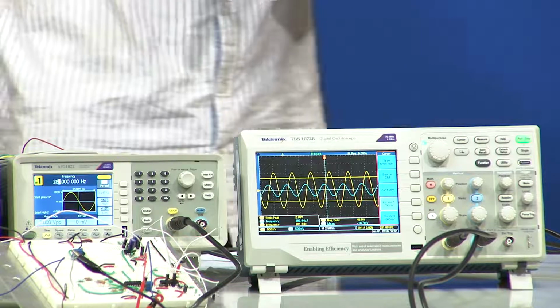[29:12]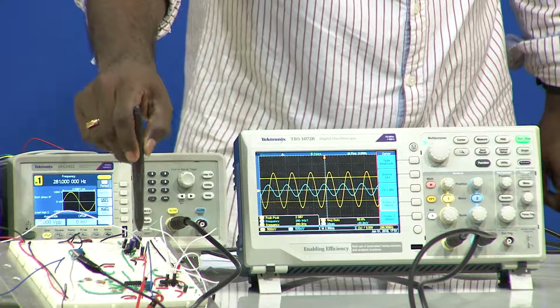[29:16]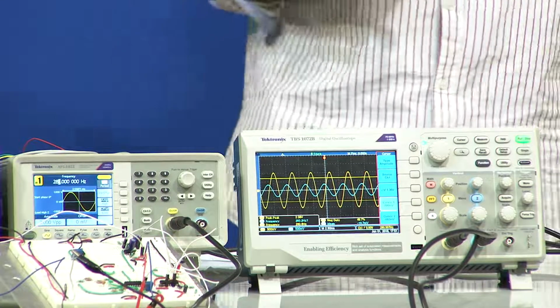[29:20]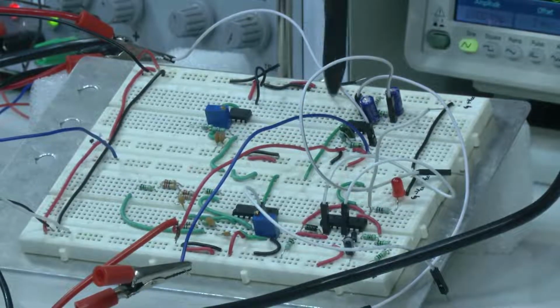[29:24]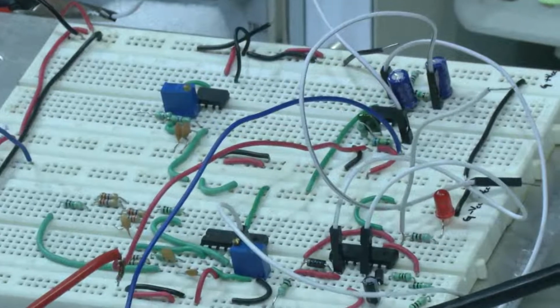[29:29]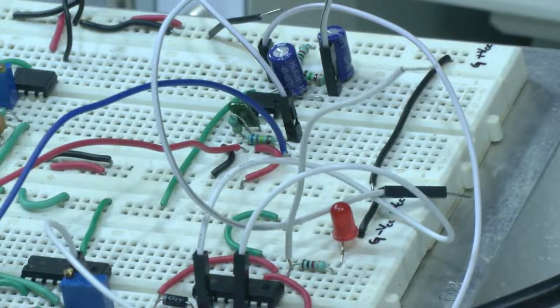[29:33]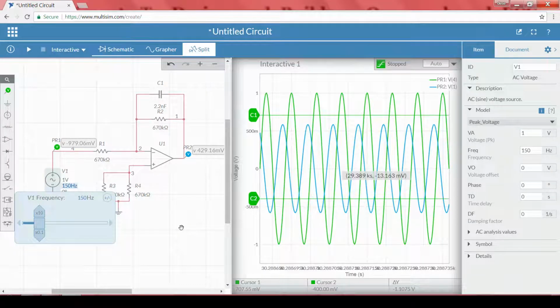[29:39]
So, this particular operational amplifier circuit, we will use for our low pass filter circuit, so that the power line interference due to odd multiples will be completely removed by using this low pass filter. Now, what next? We also require a notch filter as well as a high pass filter. Now, we will look into the high pass filter circuit, right. So, when we go to the presentation,